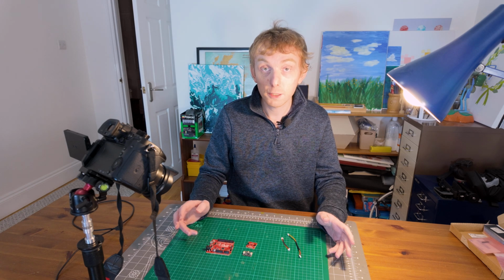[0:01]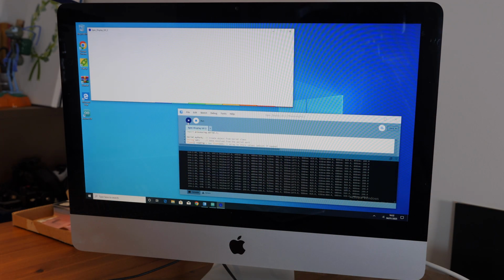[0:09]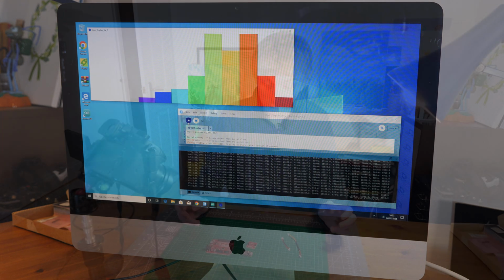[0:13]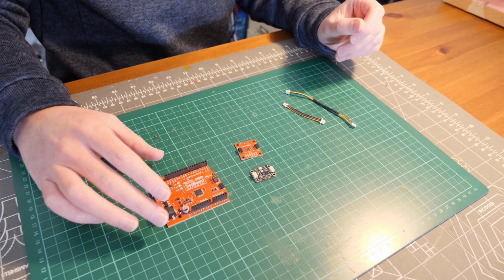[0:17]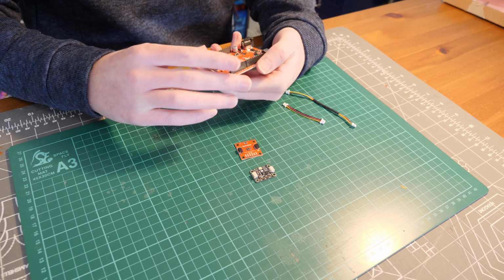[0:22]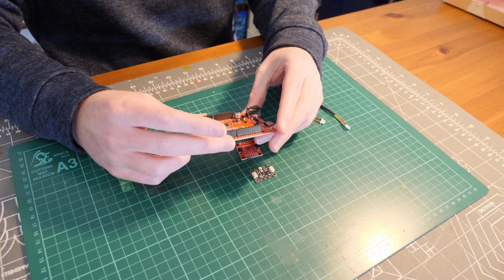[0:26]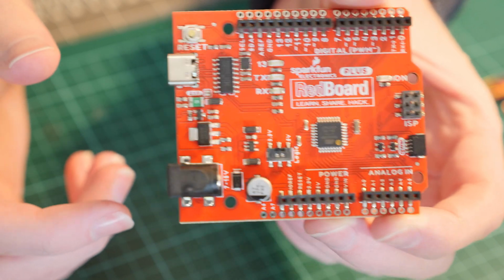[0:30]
For today's project, we're building a full spectrum light analyzer that can analyze light from ultraviolet A all the way up to infrared. To do this, we're going to use a couple of modules and an Arduino board. For the Arduino board, which will be the brains of the system, I'm using the SparkFun RedBoard Plus. This is the Uno version of it.
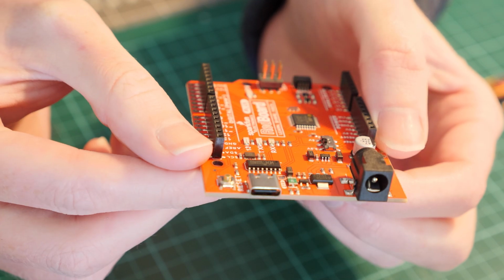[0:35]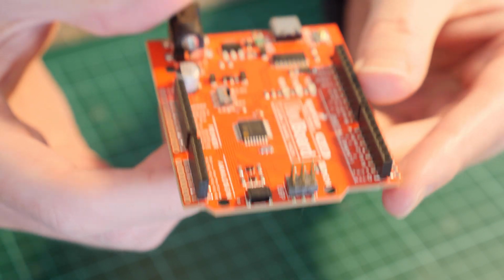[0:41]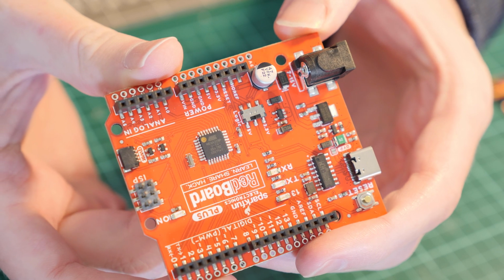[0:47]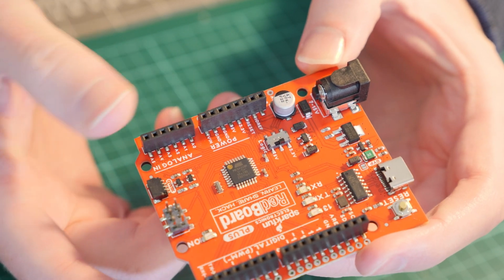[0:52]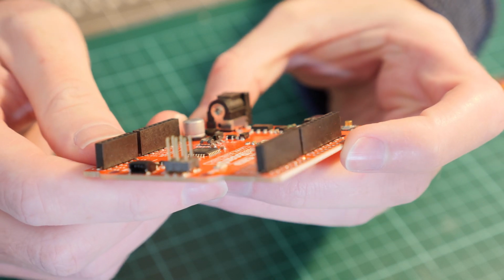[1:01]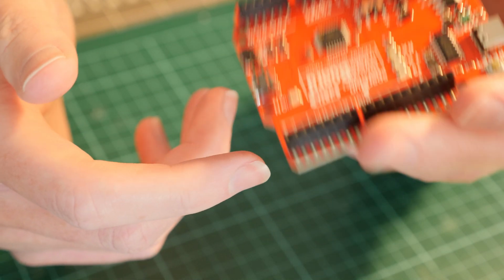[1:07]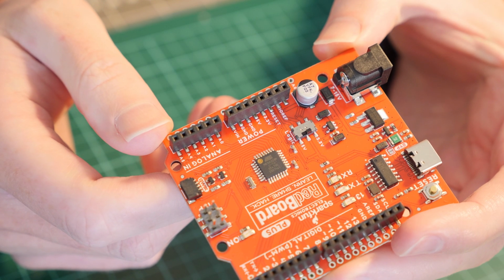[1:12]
It comes with a USB-C port, and a Qwiic connection, which is this port at the bottom. It also has the standard Arduino Uno pin format and pin layout, so you can use it for other projects as well. I have this one set because this board can be set to either 5 volts or 3.3 volts. I believe the Qwiic system, spelt Q-W-I-I-C, is a 3.3 volt system, so I have set my controller to that.
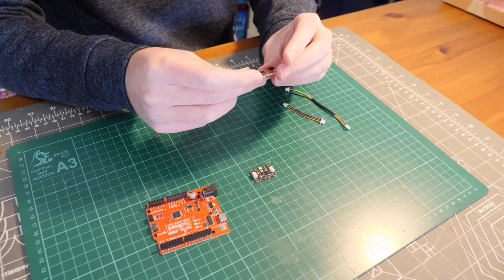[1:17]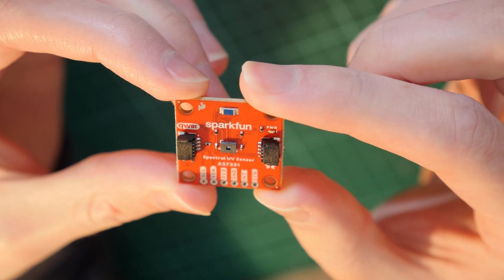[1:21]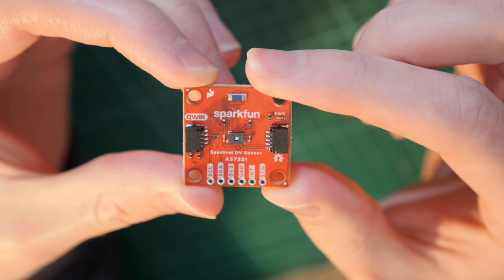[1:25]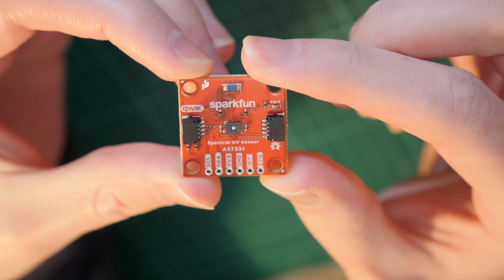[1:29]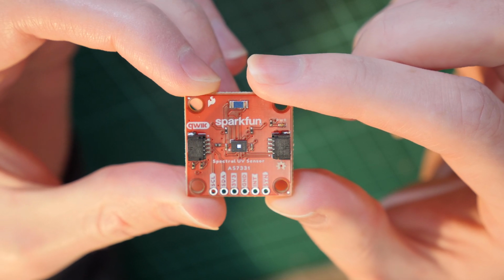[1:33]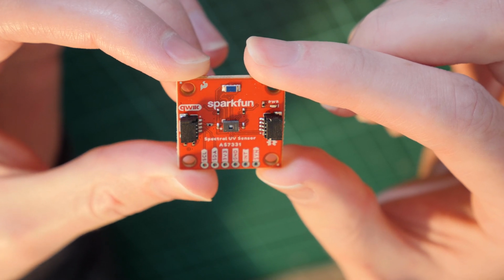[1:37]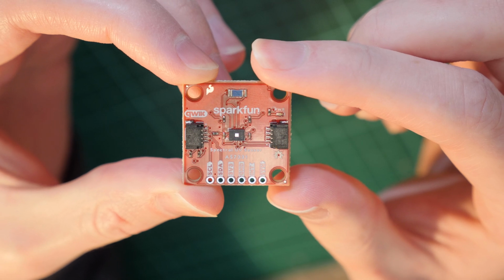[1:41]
Also from SparkFun is the Spectral UV Sensor AS7331 breakout board. This is a Qwiic breakout board with connectors on both sides. It also has pins, so if you don't have a controller with this system, you can just connect it with cables. This is for ultraviolet, so it's got three sensors on this board: a UVA sensor, UVB and UVC light sensor.
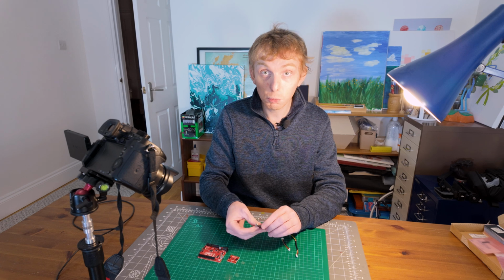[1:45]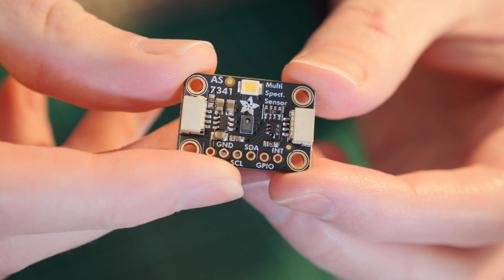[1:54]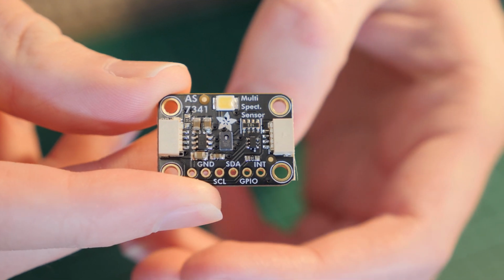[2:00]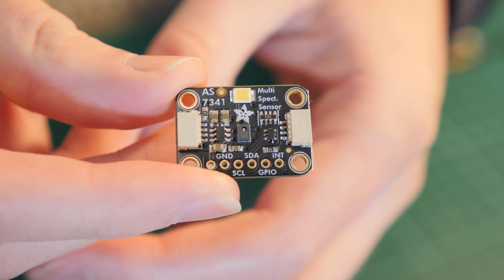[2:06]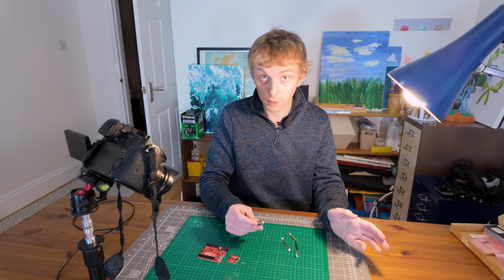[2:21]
For the visible spectrum, I'm using the Adafruit AS7341. Again, this has the same Qwiic connectors, but this is part of their system. Their system is almost interchangeable. It's the same connector and the same pinout, but these ones are tolerant to 5 volts, if I'm understanding correctly, whereas the SparkFun ones only run on 3.3 volts. So just make sure you double check which voltage your system uses before wiring everything up. This does the visible, all the way from the blue end of visible up to infrared.
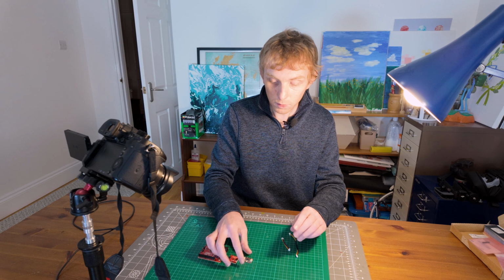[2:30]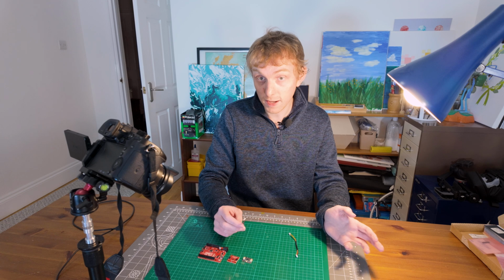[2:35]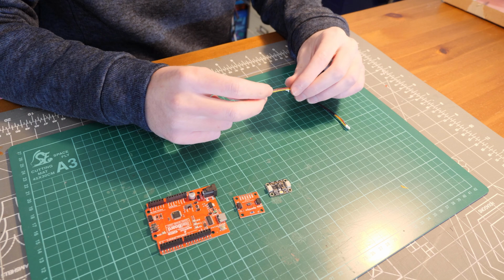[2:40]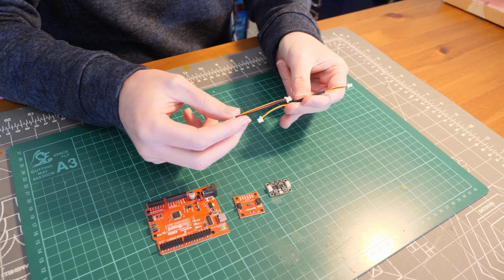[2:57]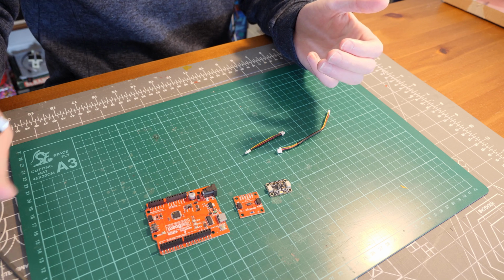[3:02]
This is a no solder project, so anyone can do this. You don't need any special tools or techniques, and it's safe to do with children. To interconnect the components, we're using the Qwiic system. So that's these little cables here. There are four pin cables that you can buy along with these kits. They come in a variety of different lengths. I've just got a couple of them here, and a USB cable to connect the whole system to a computer. I'm using a USB-C cable.
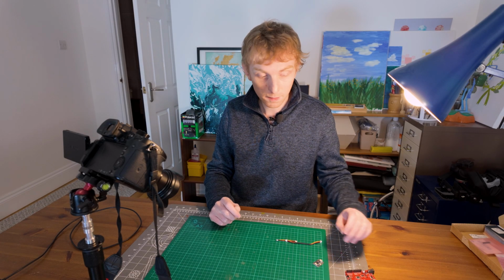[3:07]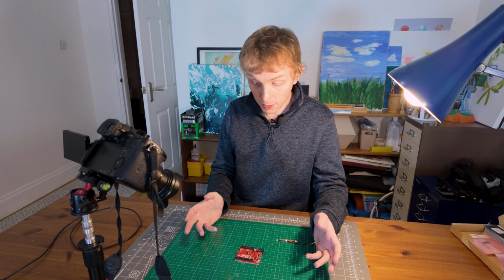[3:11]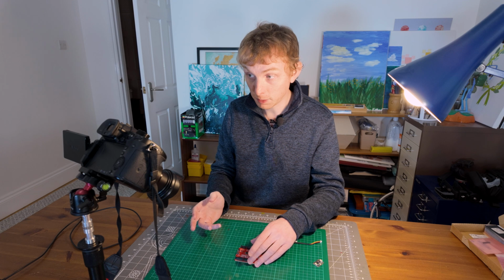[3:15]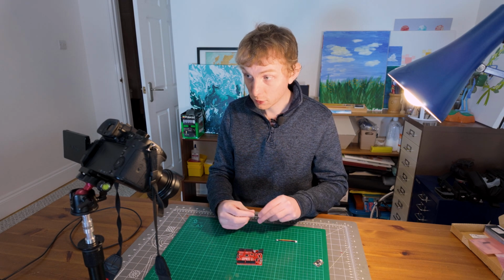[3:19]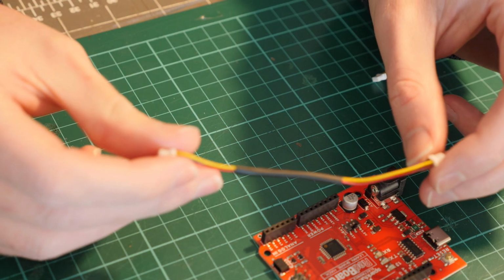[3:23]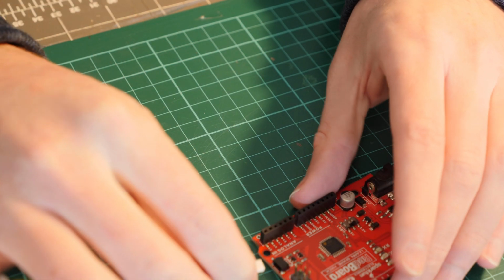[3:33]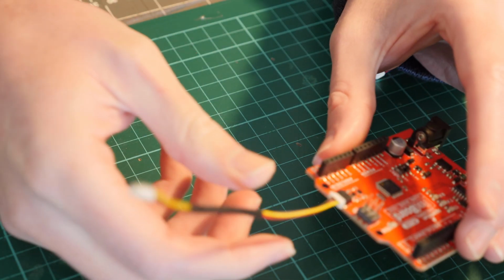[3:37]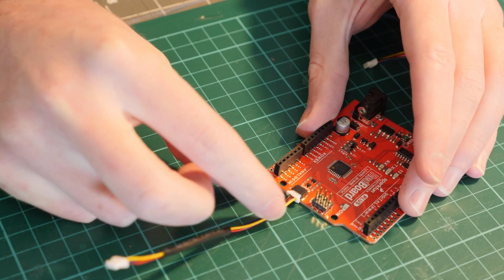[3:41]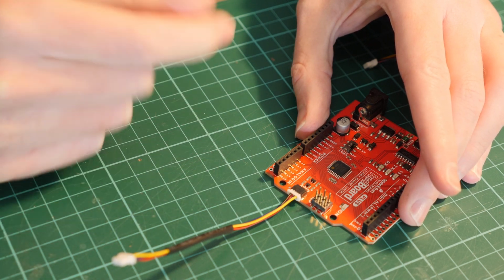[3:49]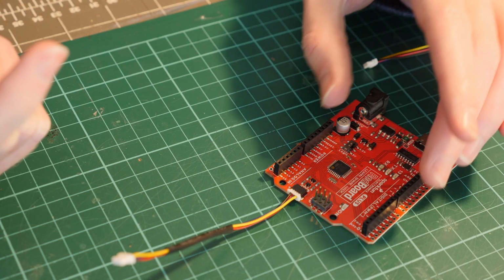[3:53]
This is a non-solder project, so it's suitable for anyone. You don't need any additional tools. It's very simple to wire these things up using the connectors. You grab the main board first, and then you grab one of the Qwiic cables. These were very inexpensive. I think they were like 80, 90 pence each, so not that dear. Then you plug it into the first board. They are keyed connectors, so they go in one way but not the other. So if you can't get it in, flip it over 180 degrees and put it in that way, like the old USBs used to be.
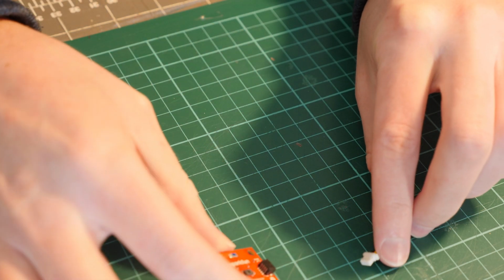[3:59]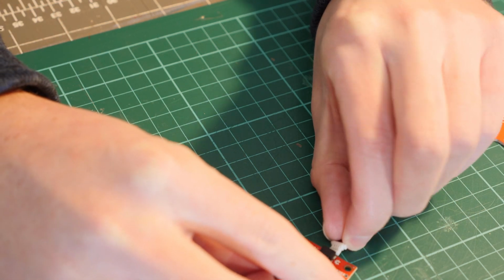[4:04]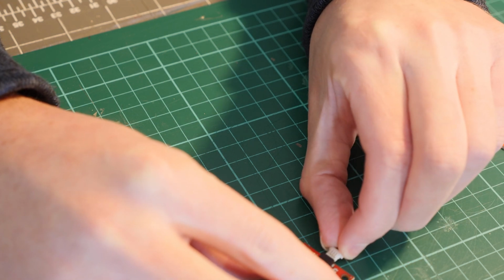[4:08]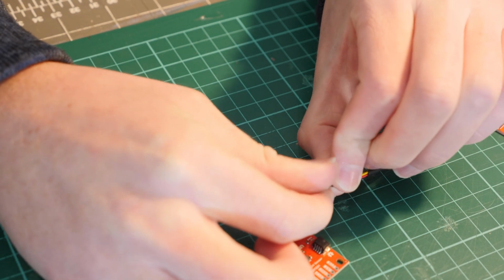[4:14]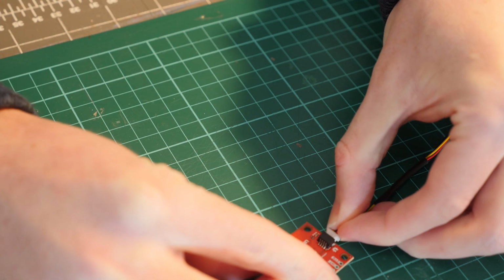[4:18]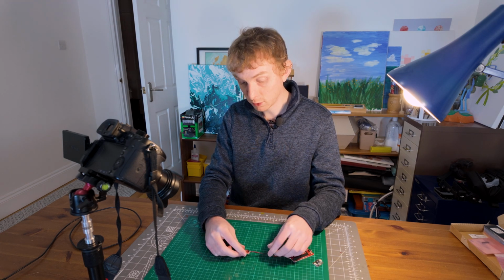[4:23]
And then you grab the other end of the connector and this just goes into the second board. They have connectors on both sides. If it doesn't go in, flip it over. And then it goes in. It should be a bit of pressure, but not too much. The beauty of this system is they can be daisy chained together.
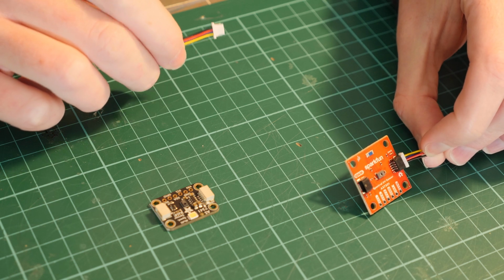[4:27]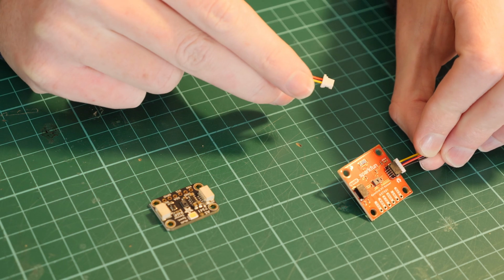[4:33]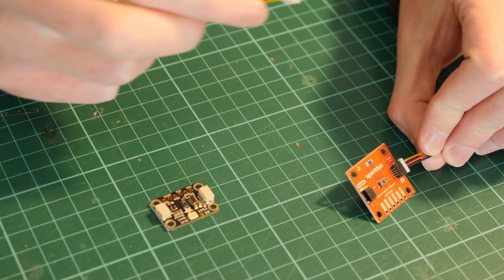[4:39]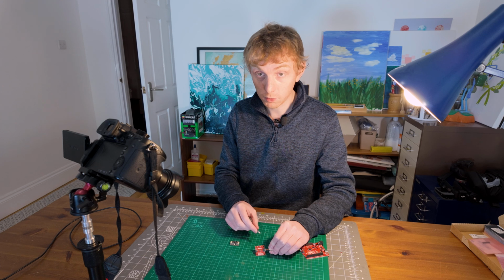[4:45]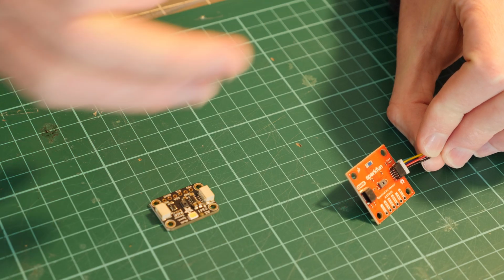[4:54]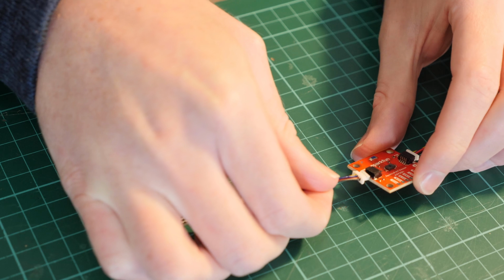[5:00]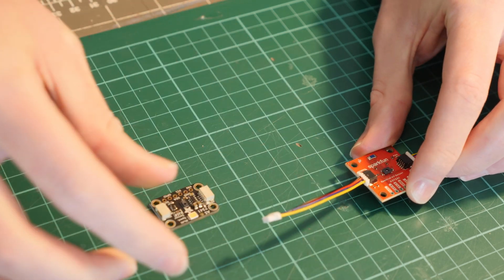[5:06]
So here I have the SparkFun connector connected to the main board. But it has two connectors on here, one on either side. So I can plug in another cable and then connect the other sensor following it in a daisy chain configuration. This puts power through the first component into the second component, and I think you can have up to 6 components in the chain. But certain components will use more bandwidth than others, so check what you're going to put in your chain. So same again, just plug in the connector, and then into the final board.
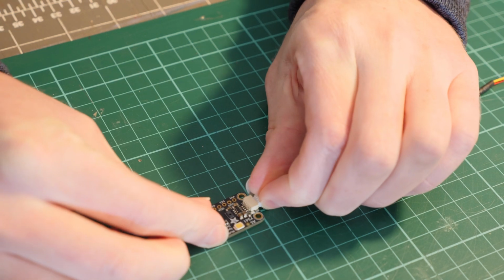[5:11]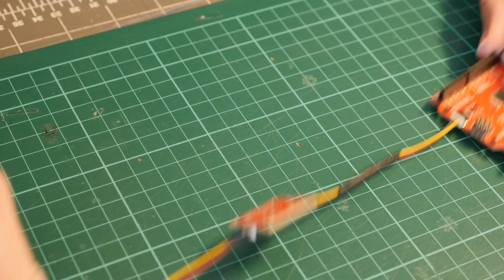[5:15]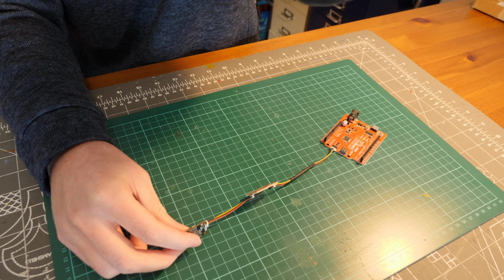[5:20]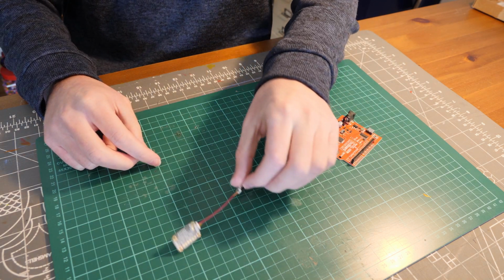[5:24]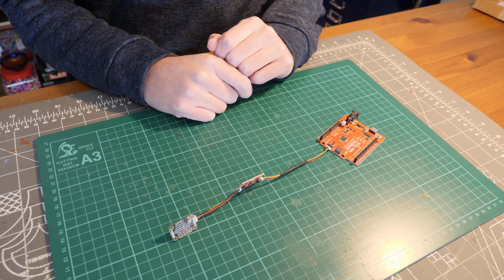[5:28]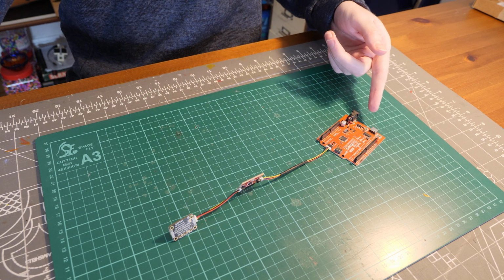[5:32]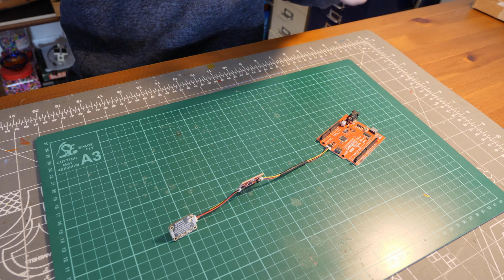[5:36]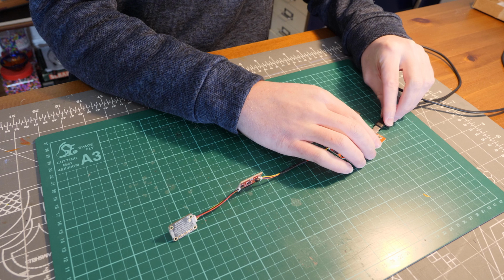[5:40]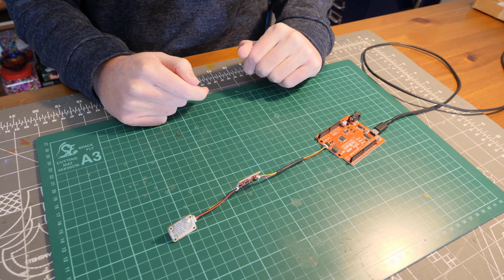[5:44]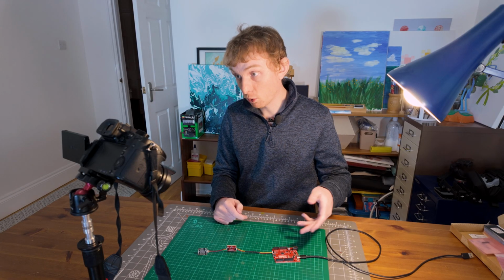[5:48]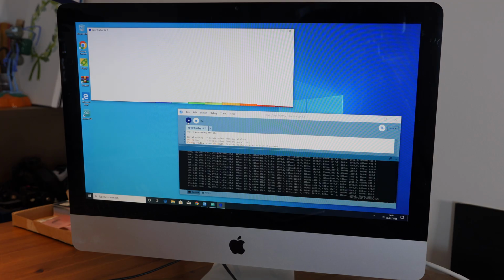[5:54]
And that's it. That is the complete wiring for this project. Just those two cables being plugged in. Now, of course, you need to connect the main SparkFun board to a computer. I'm going to be using a USB-C cable for this, and then that goes to the computer. Obviously, you can use a USB micro or USB-A or whatever your board has. To confirm it's all working, I've written a program in Processing, which is written in Java, to output the real-time
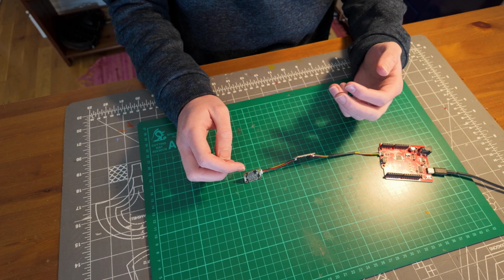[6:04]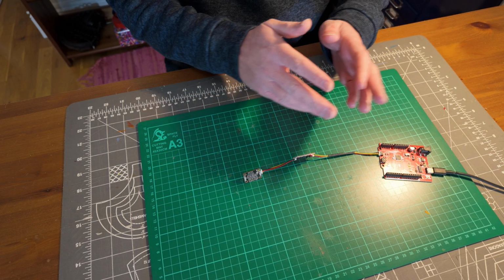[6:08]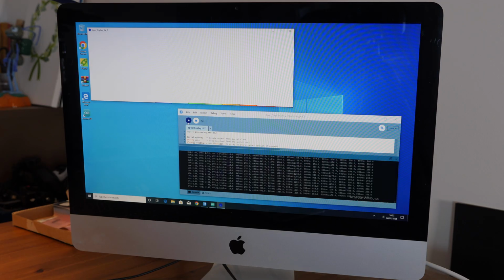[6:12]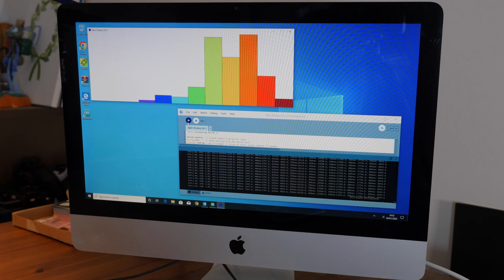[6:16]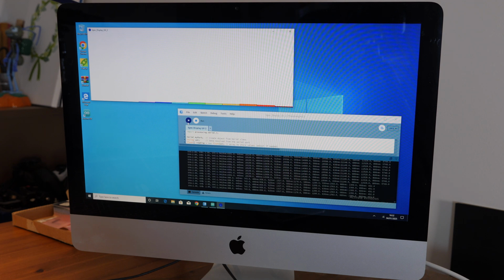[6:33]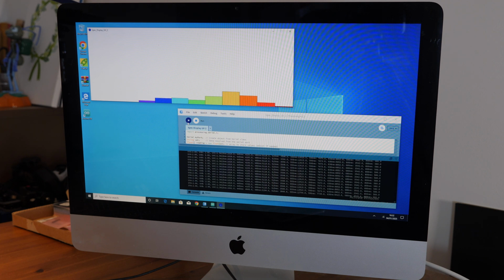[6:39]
results from the device onto a bar chart, kind of to show the full spectrum. So if I now turn over the sensors, because they were upside down, and point it at the light that's beside me, you can see that the light which I have to my left is not a very good light. It produces a lot of the middle of the spectrum, but very little of the other sides. I can also tell by turning it over that it doesn't produce any or very, very little UV light, because when I point the UV side at it, we get near zero readings. I'll share this program in a GitHub so people can download it if they want, so they can get real-time results out of the device.
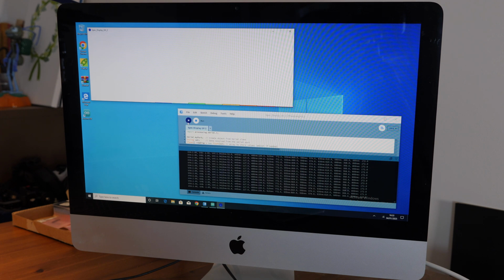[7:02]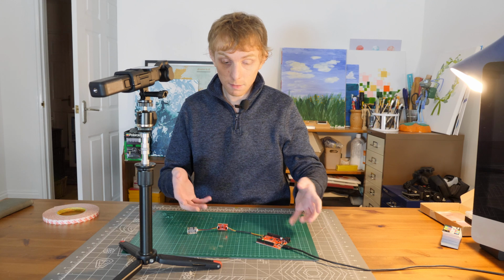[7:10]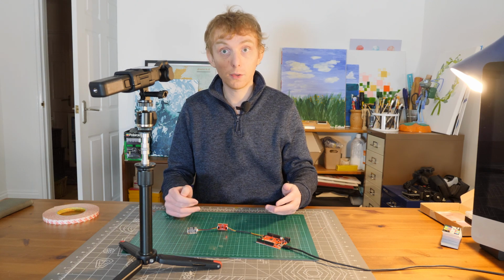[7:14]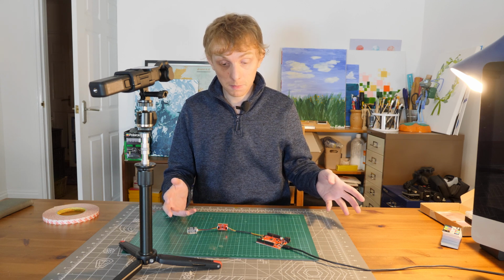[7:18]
On the bottom corner of the screen, I'm sorry, I don't have a screen recorder on this Mac PC Frankenstein thing, is the output of the actual data. So you can see real figures of how much data. I'll capture some screen capture on a different PC. Okay, this isn't the best form factor for it. It's all strung out and the sensors aren't pointing in the same direction. So I'm going to make a quick mount for it so we can do some more testing.
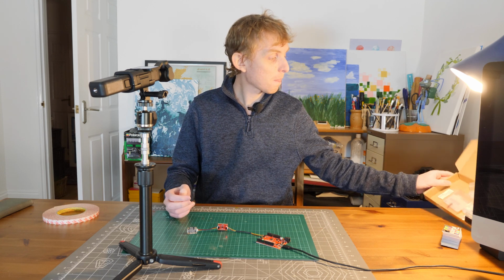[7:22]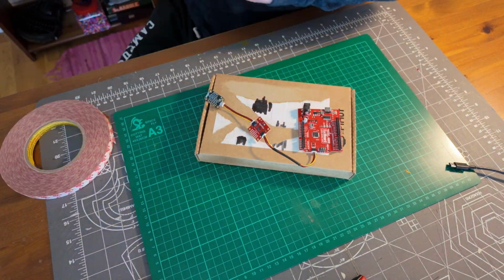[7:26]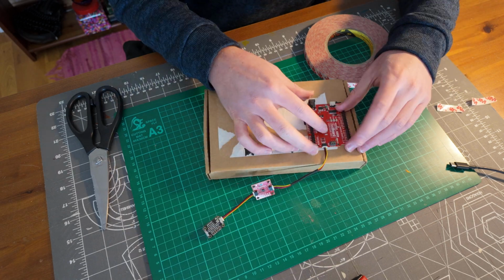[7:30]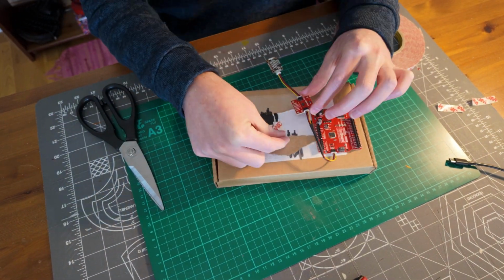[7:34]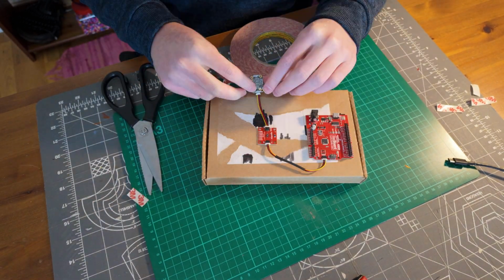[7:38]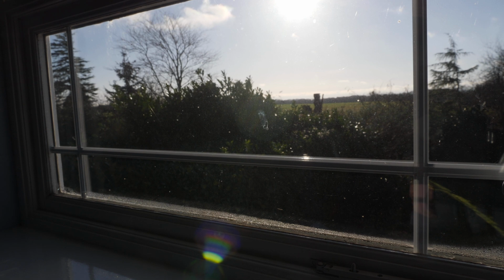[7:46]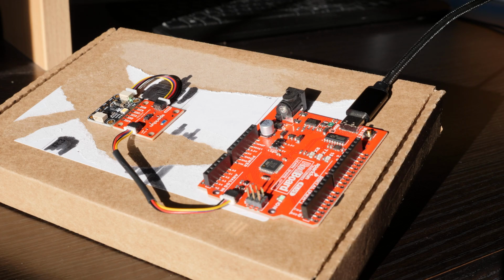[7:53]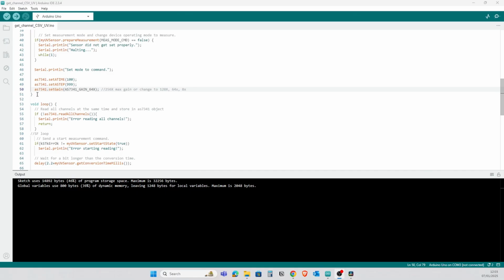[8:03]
So I've mounted the device in direct sunlight, so I've got lovely winter sunlight streaming through my window, and it's hitting the device. The readings were significantly high because it's a bright source as the sun, so I've had to turn the gain down from where I was recording earlier. You can do that in the code by changing the gain setting on the visible light sensor.
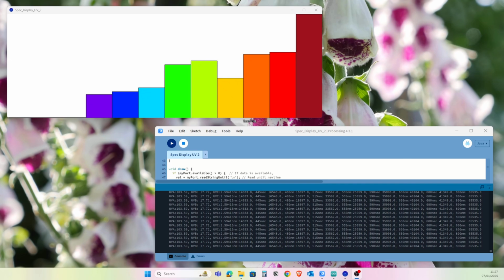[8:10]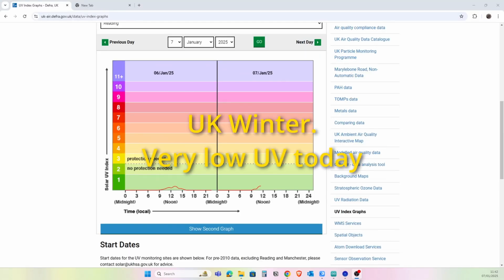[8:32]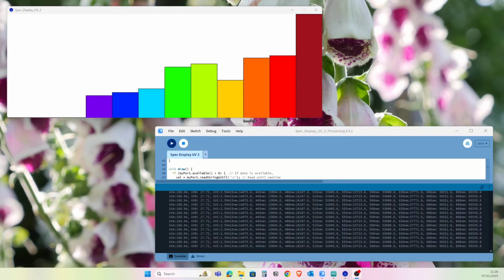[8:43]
You can see that the UVA, B and C readings are working. I'm getting 103, 17 and 2.559 for the UV sensors. So they are working. I have to do some more research. Oh, the sun's just going behind a cloud. I have to do some more research to see what sort of scale we're looking at for those other readings, whether it's the same scale as the ones for the visible light spectrum or if the scale is different, so I need to change the scaling on my chart.
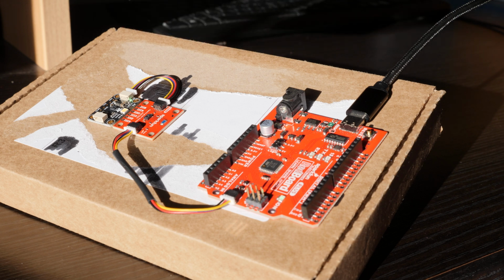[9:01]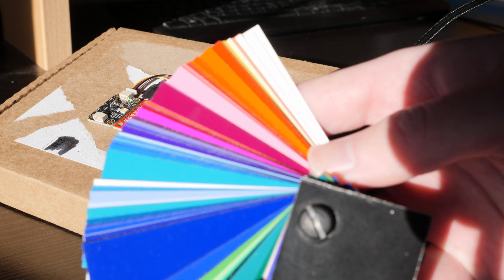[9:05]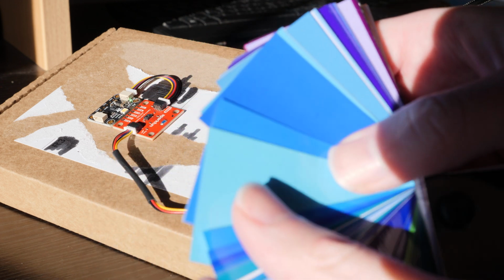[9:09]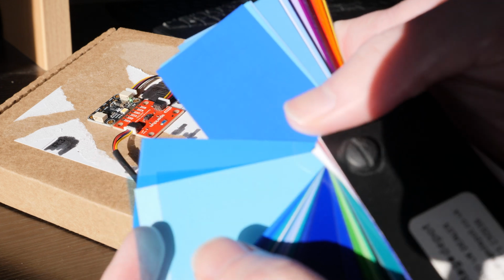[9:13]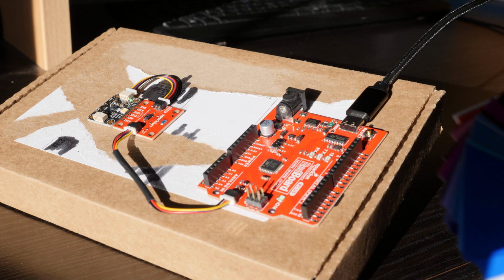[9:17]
The sun's just moving behind clouds, so you can see it affecting it in real time as the bars go up and down depending on how much light hits it. So this was the example I was trying to demonstrate earlier. So you can have these light filters. These are the plastic filters that filter the light. They're designed for stage work.
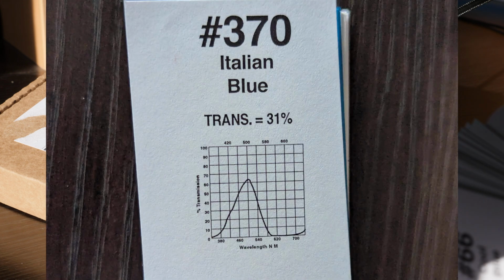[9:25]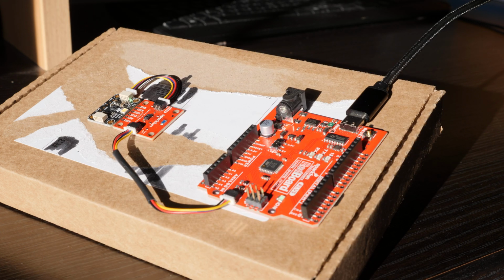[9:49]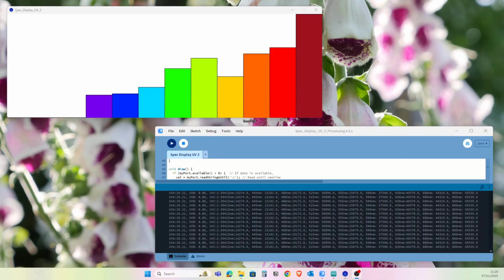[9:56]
But each filter comes with, I'll get a shot of them, a light spectrum analysis of which wavelengths of light it filters out. So I've got Italian blue, which says it filters out light above 620 nanometers. So they will be the red bars. Then I can hold that in front of the sensor. I can put that in front of the sensors, and you can see it blocks out a lot of the higher spectrums.
The big, dark red bar on my chart, that's infrared light. So that's approximately 800 nanometers. So that's above visible, and that's basically recording the sun's heat energy being sent to the sensor. If I made the gain for that one sensor suitable, it made all the other readings so small it was a bit silly to have it that way. So I left that one maxed out past the top of the chart.
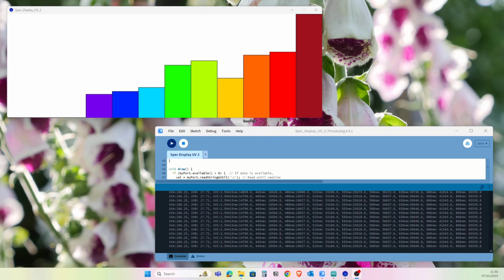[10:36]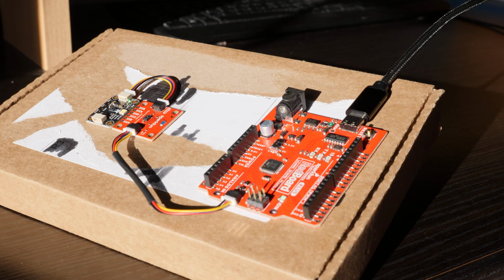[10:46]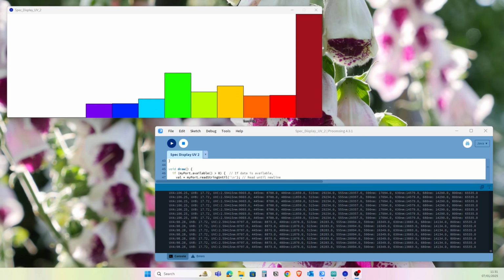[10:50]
I'm going to try a green filter, which might be better than my blue example. And you can see this is unfiltered light. And then I put the filter in front of it. And we can see it cuts out everything but the green channel, or reduces everything but the green channel. It doesn't have any impact on infrared light, which must pass straight through it.
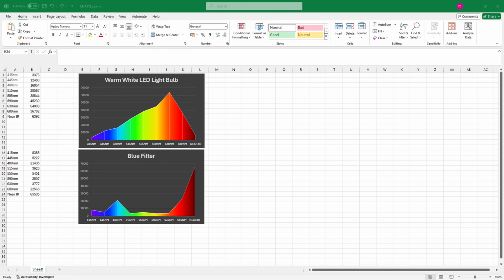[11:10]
You can also take the data, you can see here in this raw section at the bottom, and produce charts with it, because you have the raw numbers. You can put that into Excel and then produce line charts that look like the spectrum analysis you see on websites. So I'll show an example of what I've done here with that data.
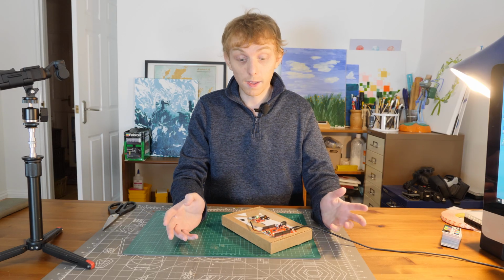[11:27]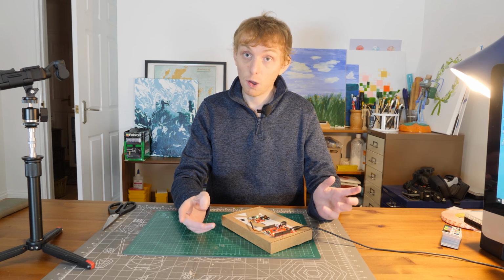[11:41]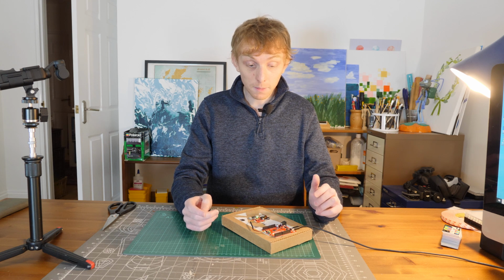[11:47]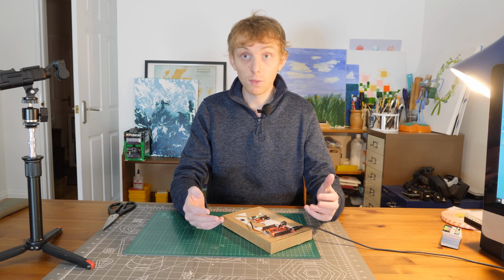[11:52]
Okay, so now to the software. I mainly used two libraries, one provided by SparkFun, one provided by Adafruit, to get the code up and running. I combined the two examples using the two libraries and combining the code. I'll put the code I used in a GitHub link linked below. They're very simple codes. I modified it so it outputted both readings as one long string, and I also changed it so it outputted in CSV format so that the processing software for the real-time viewing had an easier job importing the data.
For the SparkFun board, I did have to install the additional USB driver that can be found on the SparkFun website. I'll link to that below.
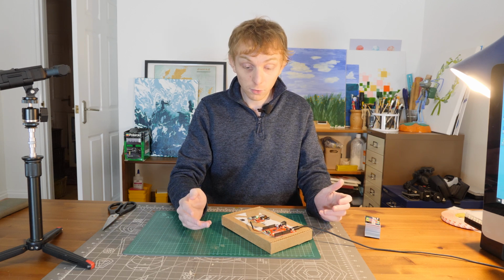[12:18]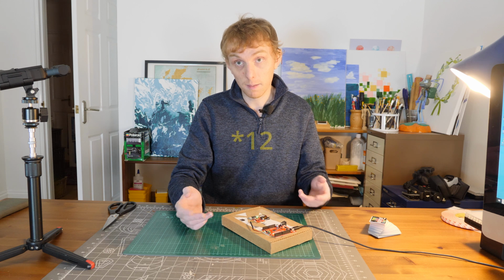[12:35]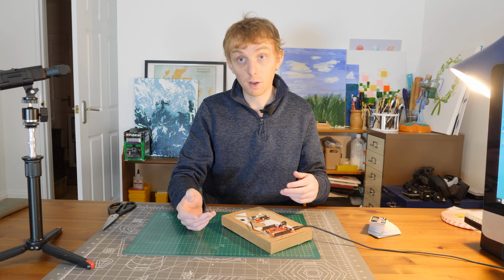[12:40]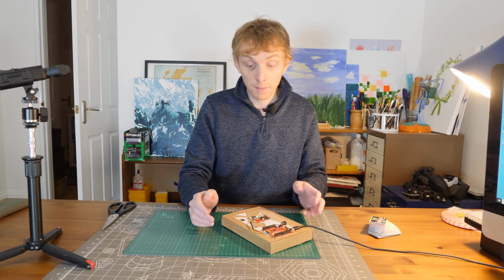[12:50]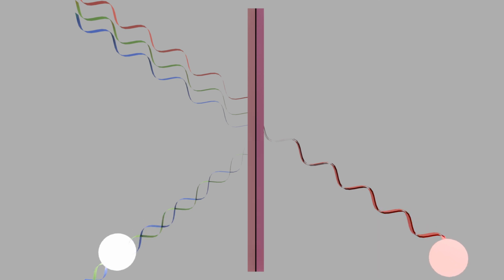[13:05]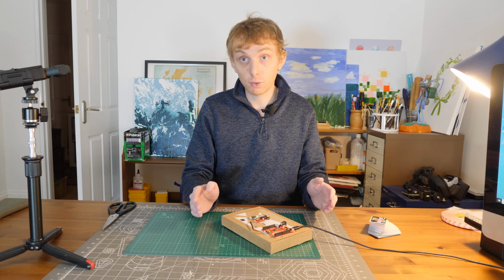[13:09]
This allows for the spectrum to be analysed and you get to see which colours light is made out of, because it's made out of all the colours. Well, natural light is made out of all the colours. Artificial light is made out of a selective band of colours. Different LED manufacturers focus on different sets of colours within the band to make it feel more natural.
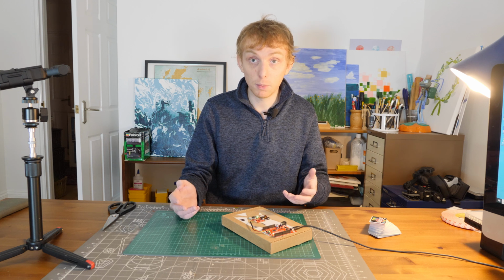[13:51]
I've incorporated a UV sensor on the board just to make sure that the artificial lights aren't outputting UV light. They shouldn't output UV light because that band isn't useful for visibility, so there was no point in engineering chips to do that. But sometimes they accidentally output it if they're manufactured badly or you have some old technology, like a CFL bulb, which can output UV light if it's damaged.
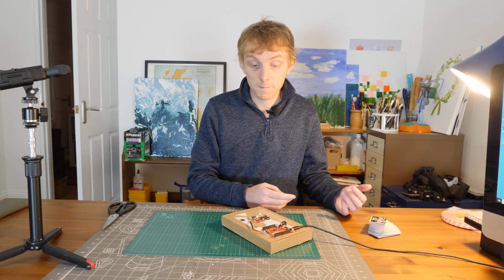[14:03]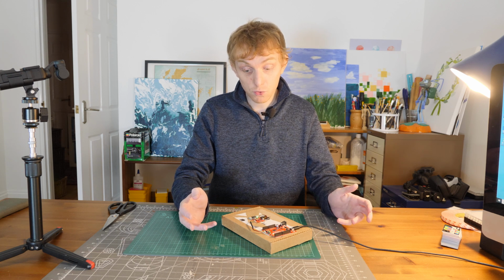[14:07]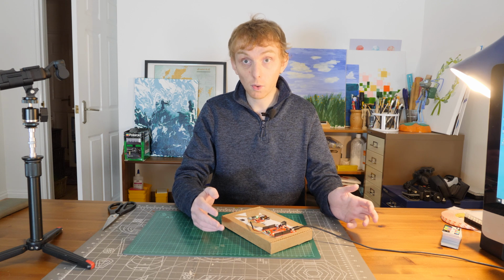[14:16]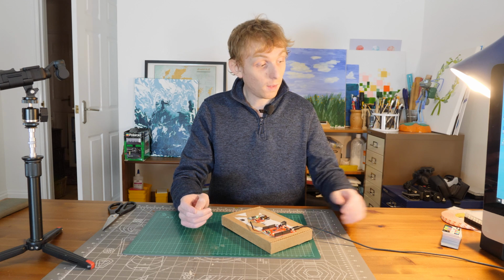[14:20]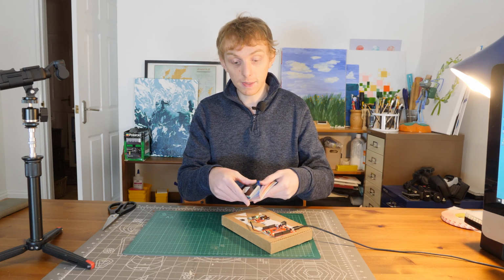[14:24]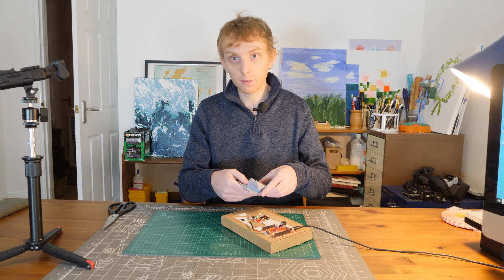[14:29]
I think this is a very fun new educational project for people interested in science. It provides immediate real-world data where you can look at a light source and then see what light wavelengths it's made out of. As demonstrated in the example with the filters, it's very useful to see what wavelengths of light are filtered out to make which colours.
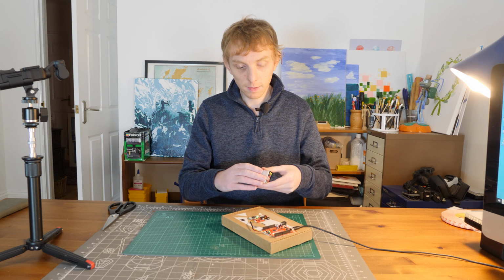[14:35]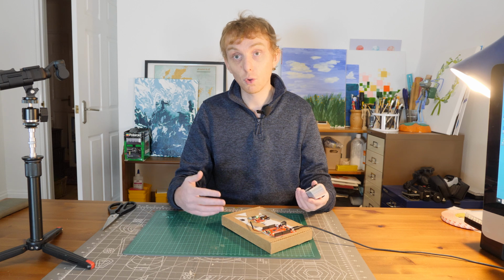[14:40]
It's not always as obvious as you think. You don't think, oh, it's just all red light. There are other bands in that light.